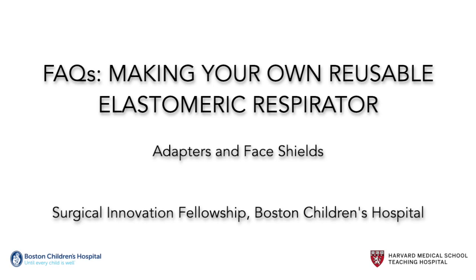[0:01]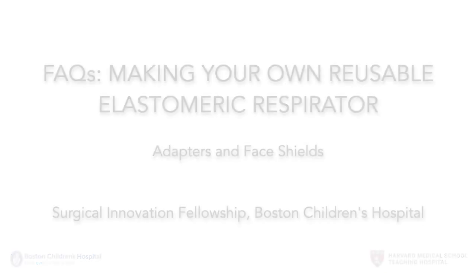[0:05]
In this video, we'd like to introduce a few new design features that we hope will help make our respirator a little more versatile. The first is a 3D printed ring adapter that fits to standard anesthesia masks and allows a mask to be secured to the face with a wide array of elastic straps. The second is a 3D printed adapter that connects the mask to the filter in such a way that allows the respirator to be more easily used with a face shield. We've also created an adapter that allows for improved breathability.
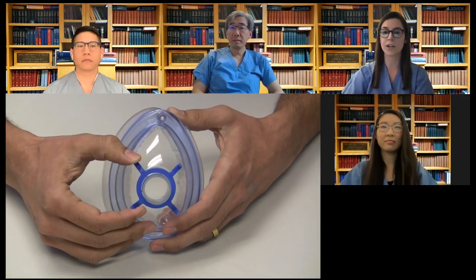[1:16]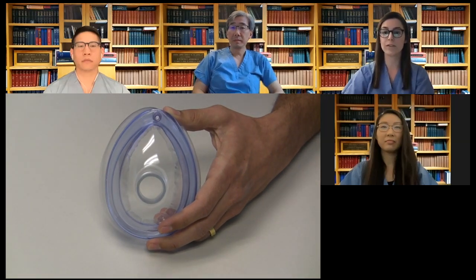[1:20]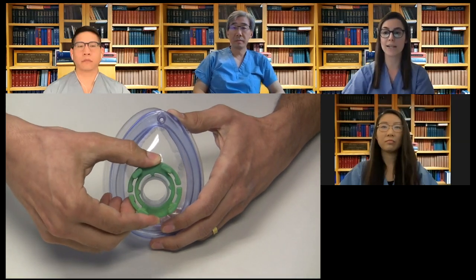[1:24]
In our first video, we explained that the ring hooks that often come with standard anesthesia masks can be used to secure elastic straps. For those of you who don't have access to ring hooks, we've developed a printable universal adapter that fits onto an anesthesia mask like a standard ring hook, but allows for variability in elastic straps. Let's take a look at how this ring adapter works.
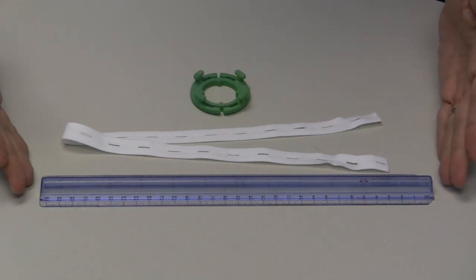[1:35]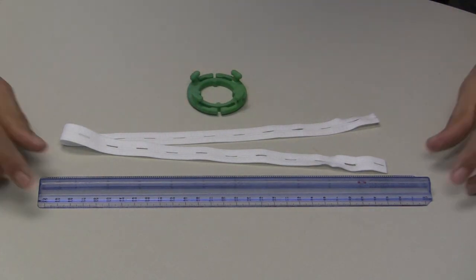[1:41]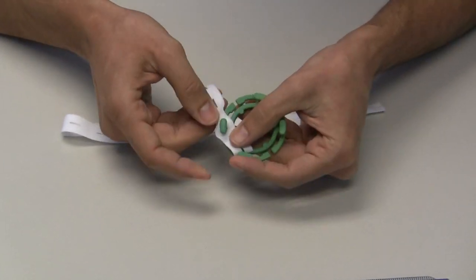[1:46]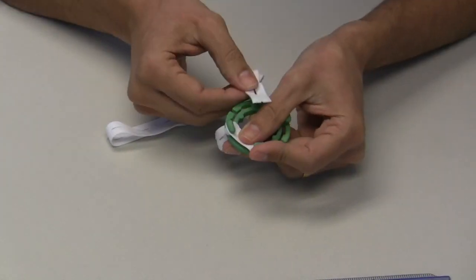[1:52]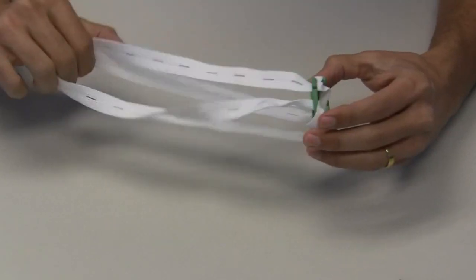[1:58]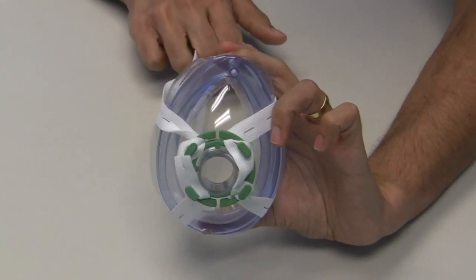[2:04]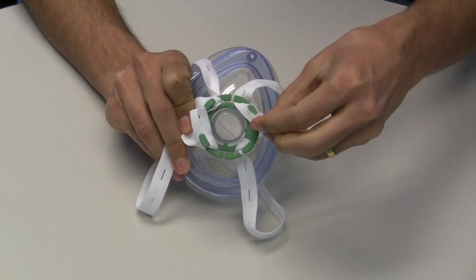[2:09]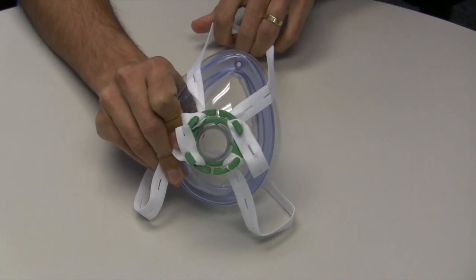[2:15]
Around the hospital, you may be able to find elastics with perforated holes along their length. These elastics are typically 21 inches long, which is an appropriate length for this purpose. Using these holes, the elastic can easily be secured to the pegs on our adapters, like so. After securing two elastic straps, attach the adapter to the mask and ensure a good fit on your face. If the fit isn't quite right, the benefit of the perforated straps is the ability to easily switch holes to loosen or to tighten the mask without needing to disassemble the adapter.
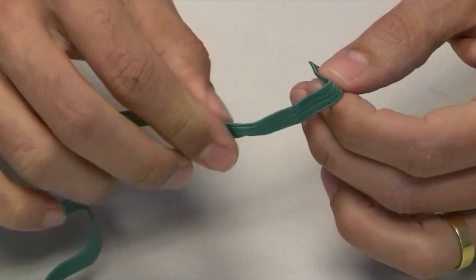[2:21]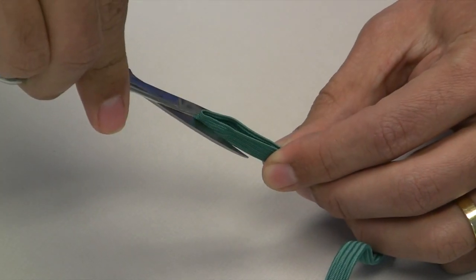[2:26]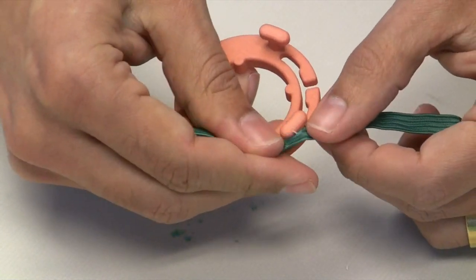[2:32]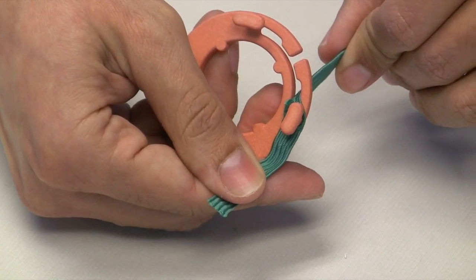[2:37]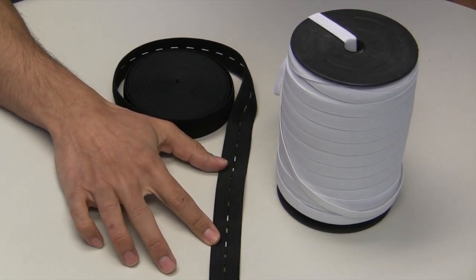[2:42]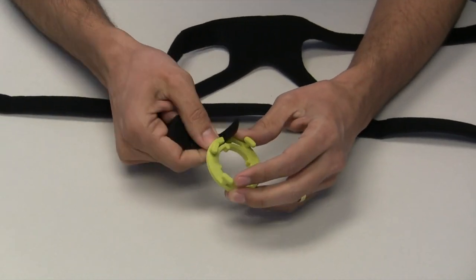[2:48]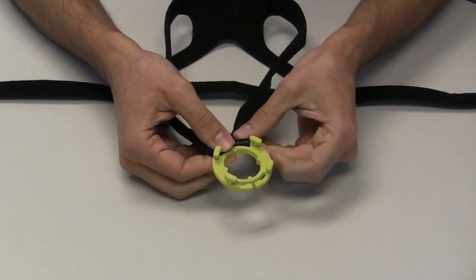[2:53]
We previously demonstrated use of our mask with elastics found on standard non-rebreather masks. To use these straps with our adapter, you can cut holes into the ends and similarly fasten them to the pegs. Many types of elastic straps, with and without pre-made holes, are commercially available. Some of you might want to use CPAP straps. These work slightly differently. The ends of these straps have Velcro, which allow them to be looped into the adapter's specially designed channels. Other available Velcro straps work as well.
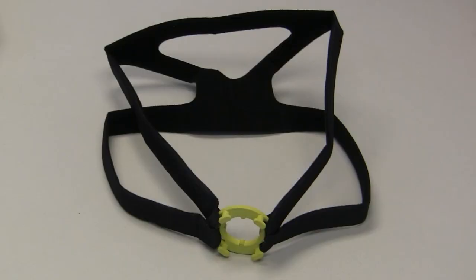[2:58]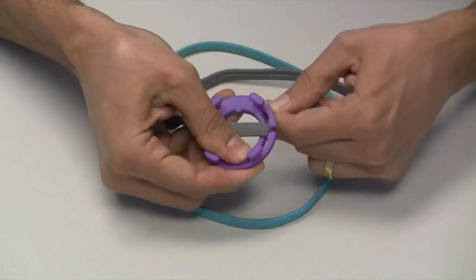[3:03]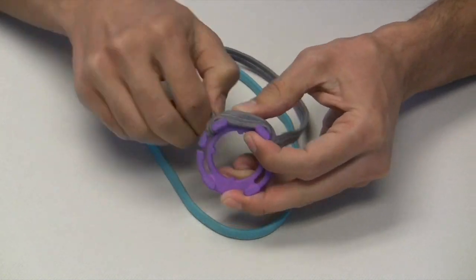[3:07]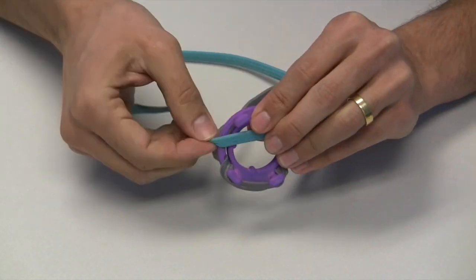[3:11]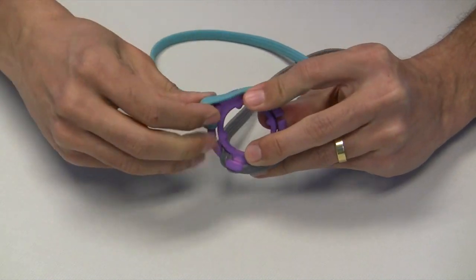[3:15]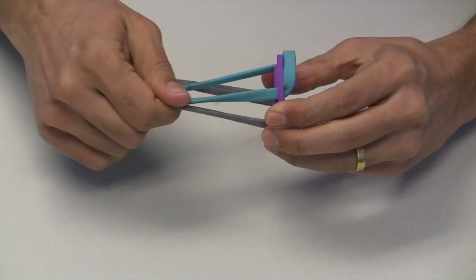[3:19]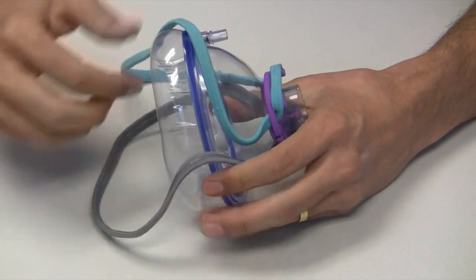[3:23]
Some of you might have two spare elastic sport headbands, or something similar, at home. These can also easily be used with our adapter by taking advantage of the side channels. Regardless of what straps you use or what configuration you use them in, you'll still be able to attach your filter to the mask without issue.
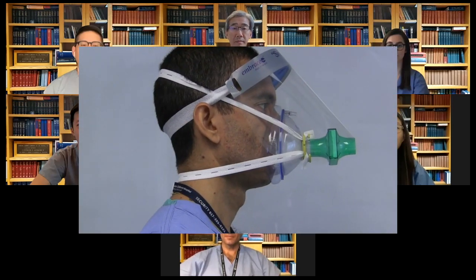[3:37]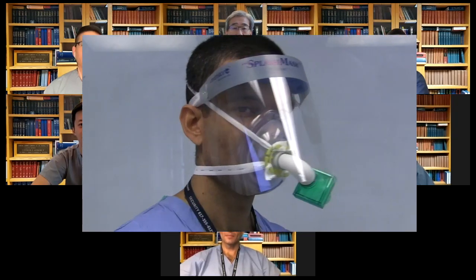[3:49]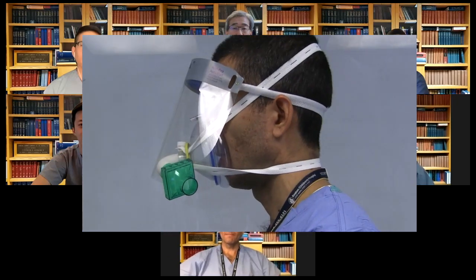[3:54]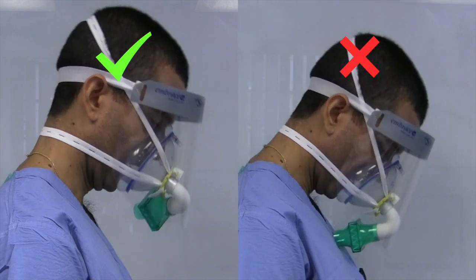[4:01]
After releasing our initial design, we received a lot of questions about whether our respirator could be used along with a face shield. There was some concern that the extent to which the filter projected in front of your face would make wearing a face shield difficult. In order to address this, we worked in close collaboration with the Weaver Laboratory at the Wyss Institute to develop an elbow that ensures fit between the mask and the filter while allowing for use of a standard face shield. When using the elbow, ensure that it's positioned in such a way that the opening of your filter is not obstructed by your gown.
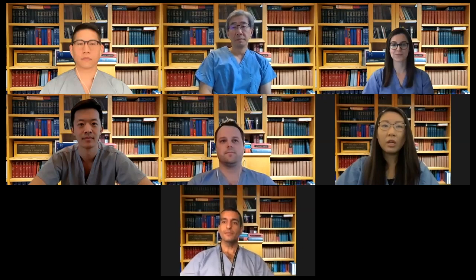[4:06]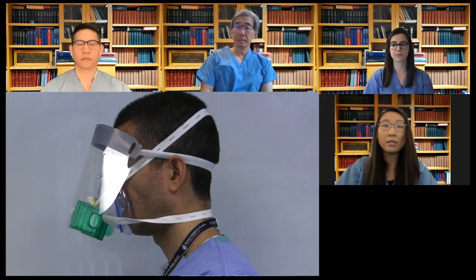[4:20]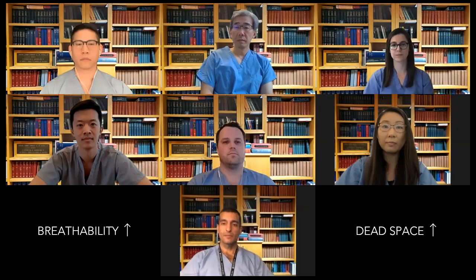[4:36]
In an effort to further improve the usability of the device, we developed a T-piece adapter that accomplishes the same goal as the elbow, but allows two filters to be used simultaneously. Some users have also added other tubing of different shapes and sizes in order to similarly make the respirator compatible with standard eye protection. All of these modifications may improve subjective breathability, but users should keep in mind that additional components to the respirator carry a risk of increasing dead space, which may lead to CO2 retention.
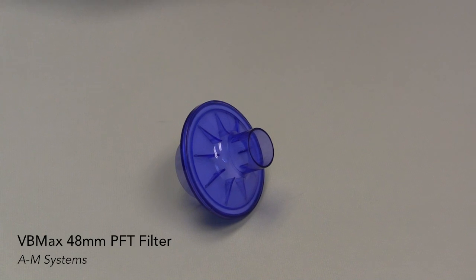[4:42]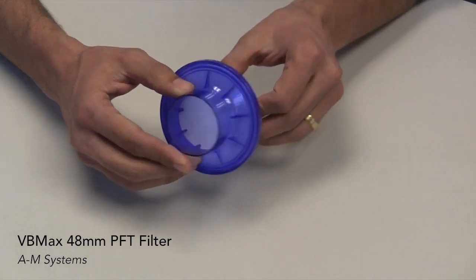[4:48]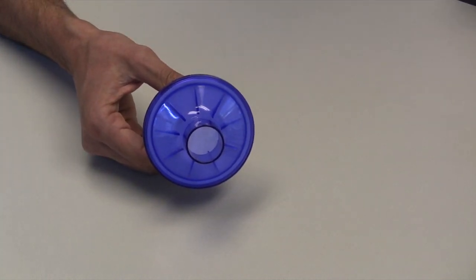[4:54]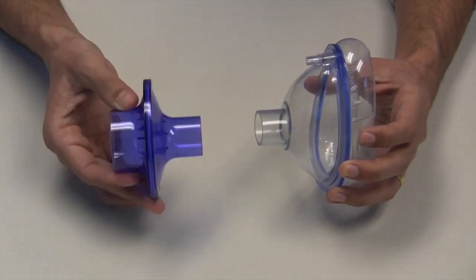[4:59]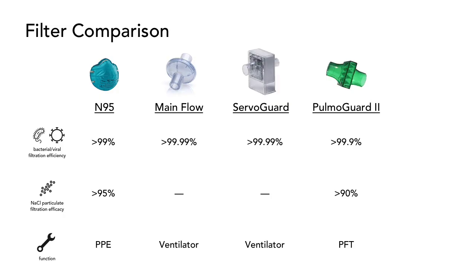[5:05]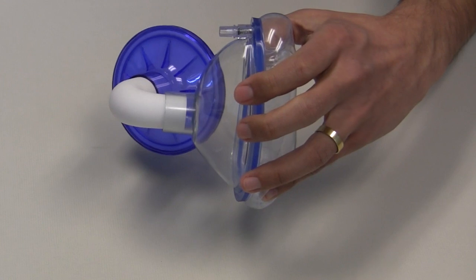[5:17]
One last thing we'd like to mention is a new filter we recently came across. This is the VBMax48mm PFT filter made by AM Systems. As you can see, it has a wide opening allowing for excellent breathability, as well as a narrow opening that fits well onto our anesthesia mask. The difference in opening size allows consistency in filter direction when reassembling the device for multiple uses. In one of our previous videos, we showed this chart comparing the various filters we've explored. Here's how the VBMax48 stacks up. This filter fits perfectly with both adapters we've discussed in this video.